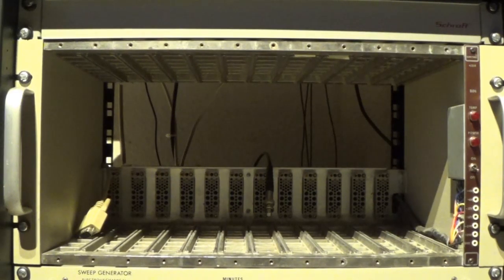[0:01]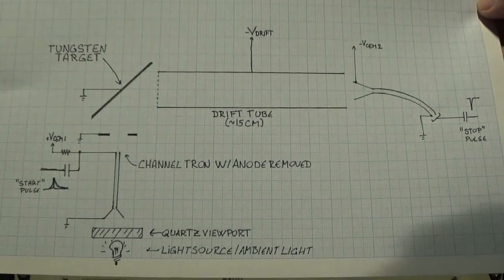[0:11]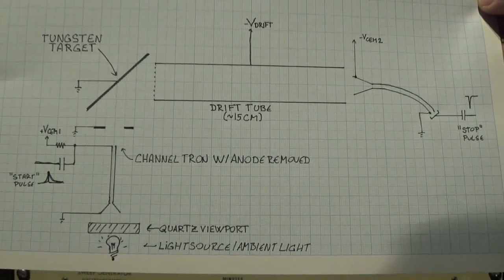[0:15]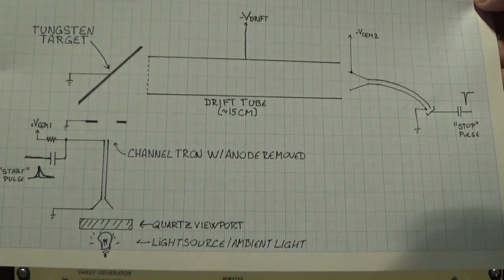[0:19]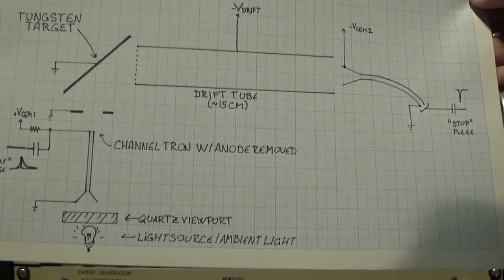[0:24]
I'm building a time-of-flight mass spectrometer, and today I'm going to discuss the electronics used in that. Fundamentally, this is the instrument I'm trying to build. The cool thing about this is that it uses two channel electron multipliers, one as ion source and one as detector. So the basic setup is this.
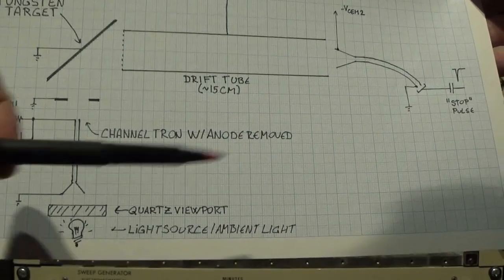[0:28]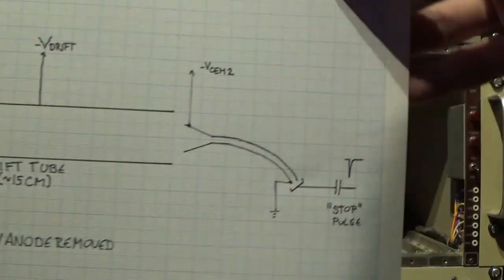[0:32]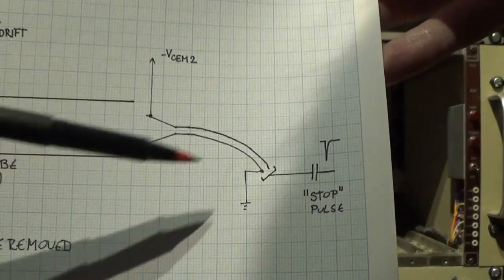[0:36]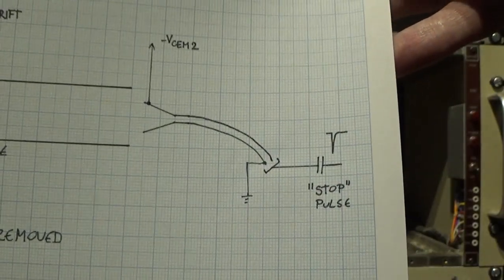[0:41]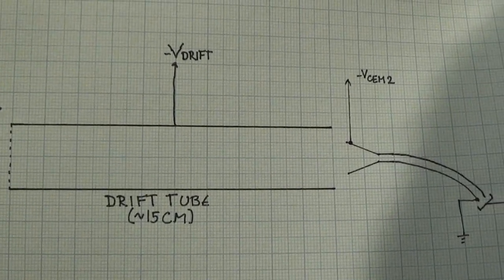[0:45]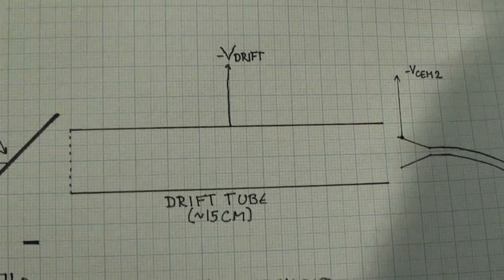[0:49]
This half is exactly as it is in the vast majority of mass spectrometers. There's a channeltron set up to detect ions, in this particular instance, positive ions. So, we have a drift tube, also called a field-free drift tube, set to some negative voltage. Once the ions are in that, they'll basically just move gently along this way.
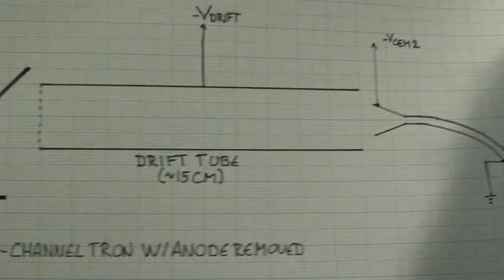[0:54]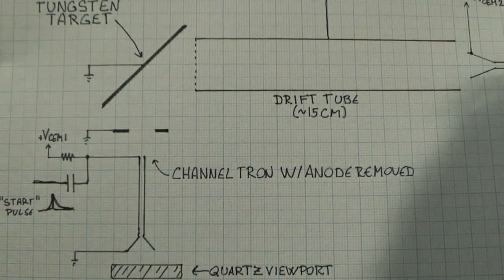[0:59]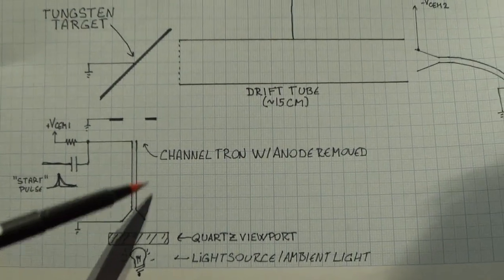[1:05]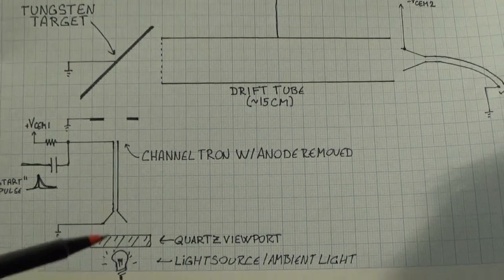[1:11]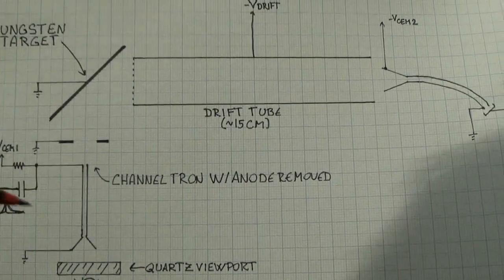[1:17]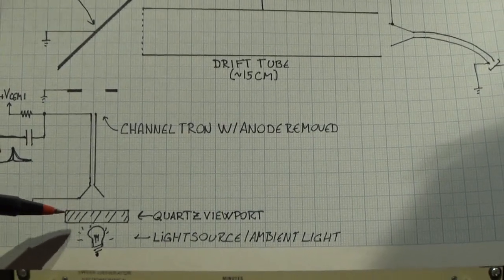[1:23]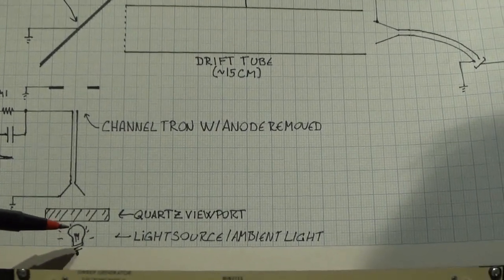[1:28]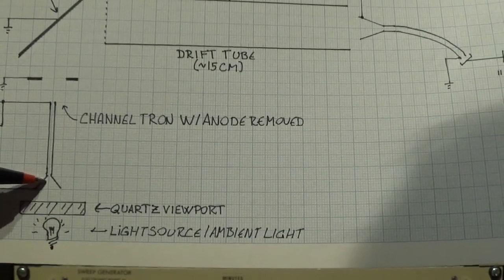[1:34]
And here comes the novel thing. I say novel, this is quite an old idea, but it's quite easy, so I wanted to try it out. We have a channel electron multiplier here with the anode removed, so this is just an open tube. It's set up with the bias that it's usually given to create a bunch of electrons. And here we have a UV transparent glass window. I have bought a quartz window for this occasion. You'll have some light source outside, maybe just ambient light, maybe a small light source. This will just shine UV photons into the electron multiplier.
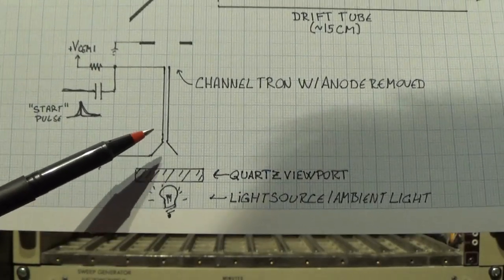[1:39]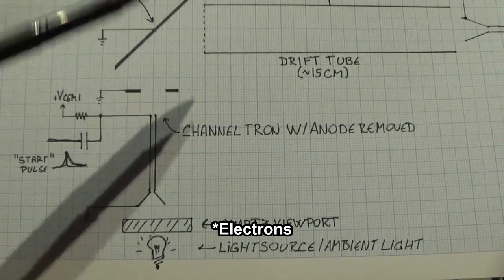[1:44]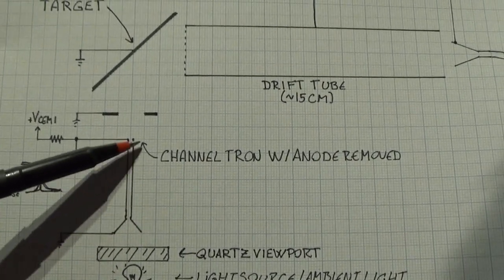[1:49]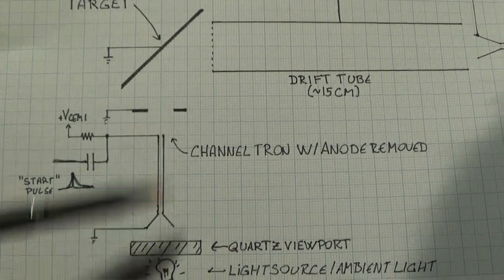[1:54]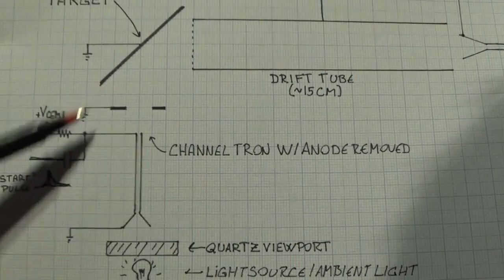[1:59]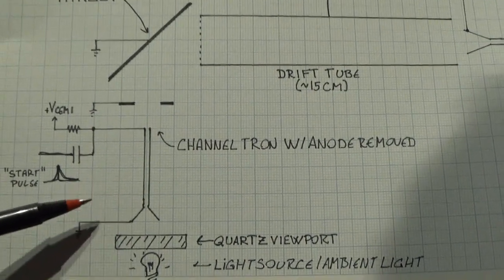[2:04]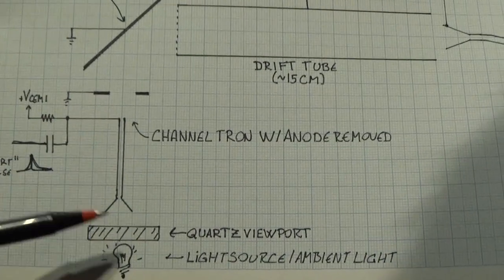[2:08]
It is also sensitive to UV photons, not as much as to electrons, but it is. And so you'll get bunches of electrons shooting out here. Remember, one particle impinging here will give a huge cluster out here. So you'll get bunches at some random interval. You can adjust the light intensity, of course, to give the counts per second you want. About 100 per second would be nice. And then you can take that pulse out exactly as with any other electron multiplier. This is basically a homemade PMT, I guess.
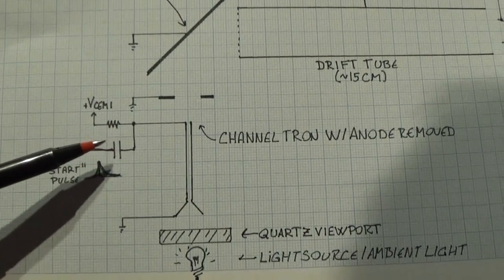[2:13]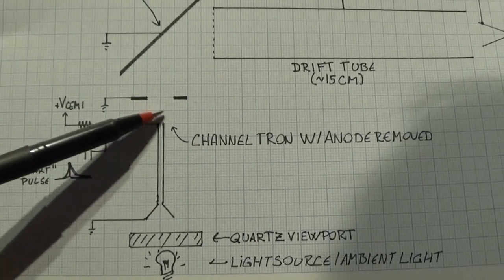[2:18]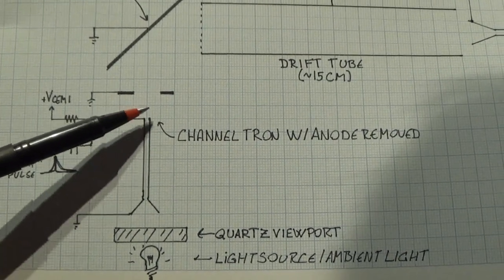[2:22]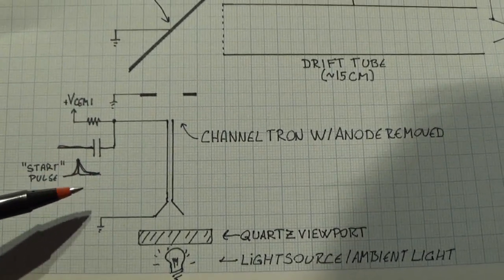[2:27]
And the pulses will be positive because we are not taking the electrons from the anode, so we don't collect electrons, we actually lose electrons, so we get the opposite polarity pulse. That's a bit confusing, but I think that's how it is. We'll see when I build it.
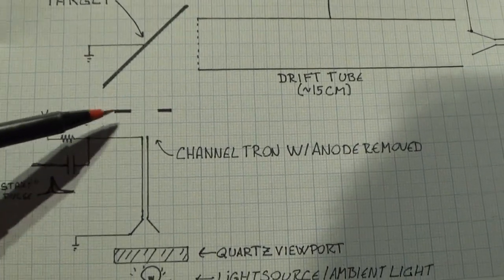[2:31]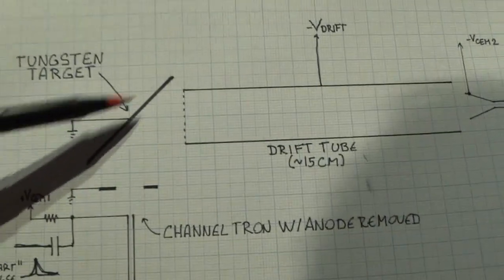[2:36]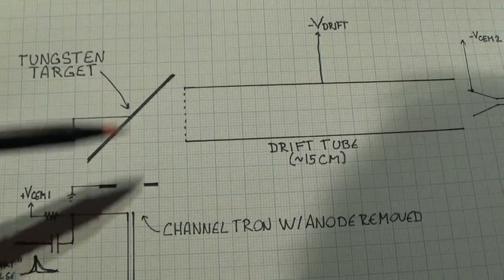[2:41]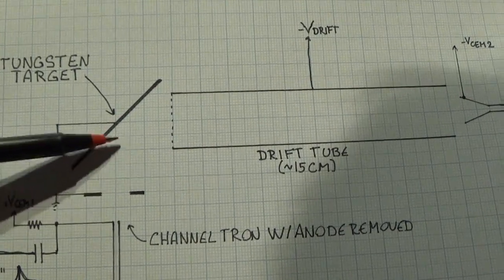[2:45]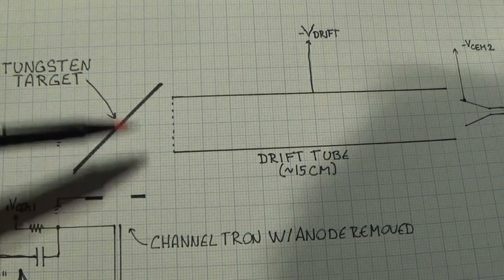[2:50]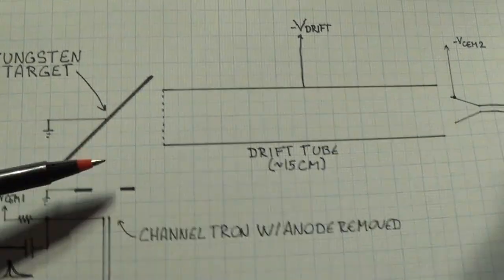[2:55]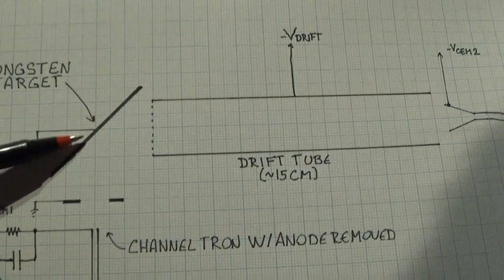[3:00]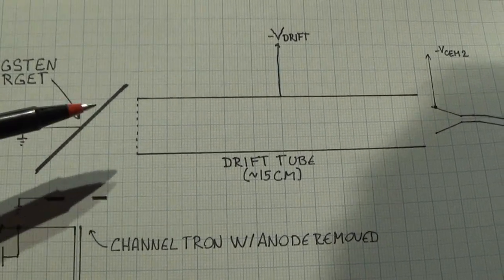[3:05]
And then there's just a guiding ring that's grounded here, and a tungsten target plate. This is just a piece of tungsten foil arranged at 45 degrees to the impinging electrons. In this volume, any gas molecules that are hit, any residual gases, will be electron impact ionized, like in GC. And if there are any ions adsorbed on the tungsten foil, they will also be ionized. So you can also use this for surface study as well as residual gas analysis.
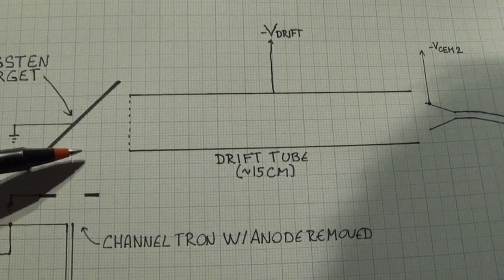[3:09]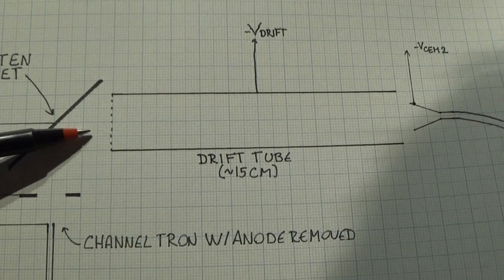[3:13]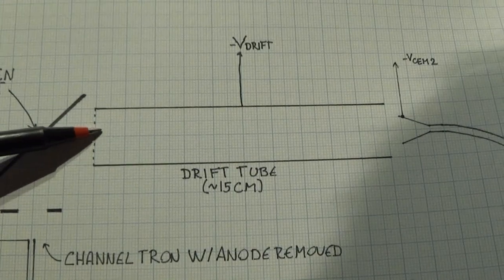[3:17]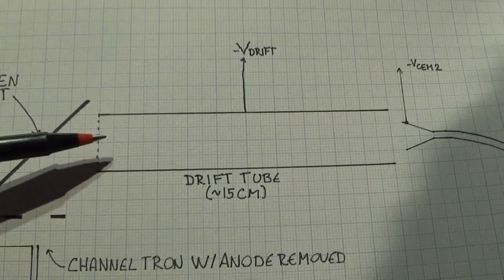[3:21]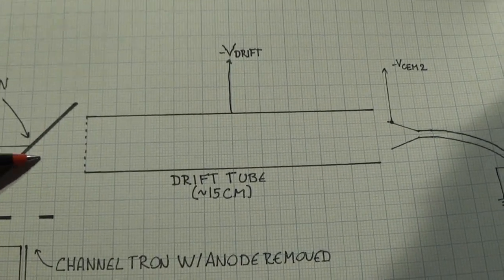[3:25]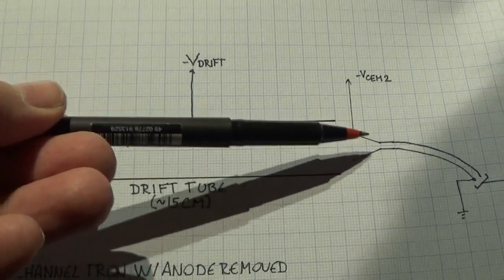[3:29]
These ions will then be positive, they'll be stripped of some electrons. And these positively charged ions will be attracted towards the negative charge of this drift tube. I'm not completely sure what drift tube voltage to use, maybe a couple of hundred volts, I'm not sure. And they'll then drift gently into this and hit this detector.
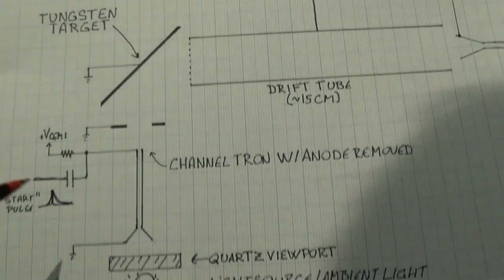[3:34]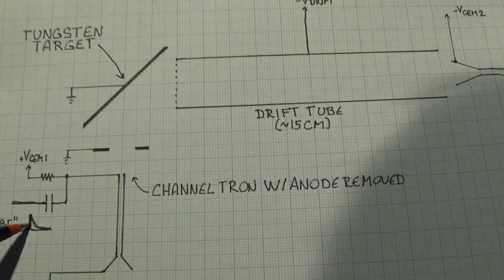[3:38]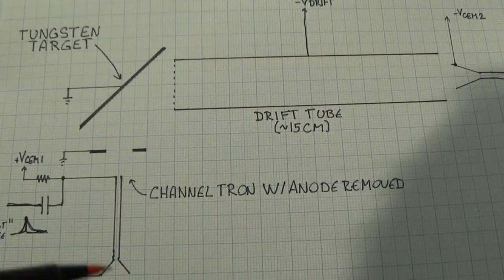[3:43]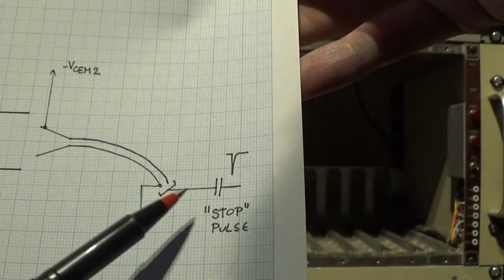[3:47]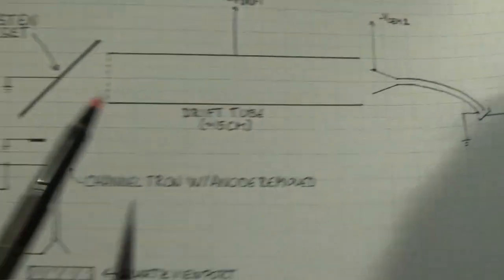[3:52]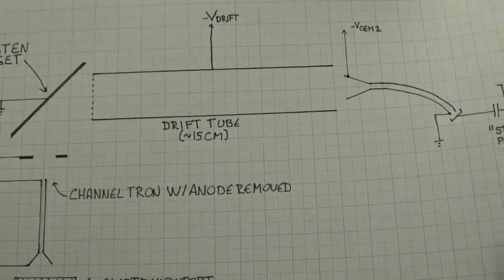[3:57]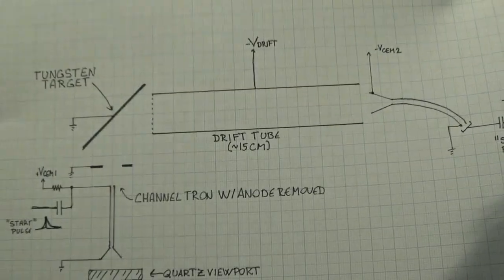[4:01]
Now, we know the time they originated, right? Because each electron bunch has a timing start pulse. This pulse indicates that electrons have left this channel electron multiplier. And the detector output signal here is then a stop pulse, and that time differential is proportional to the mass of the ion. This is the principle of a time-of-flight mass spectrometer. And this is so simple that how could it go wrong, right?
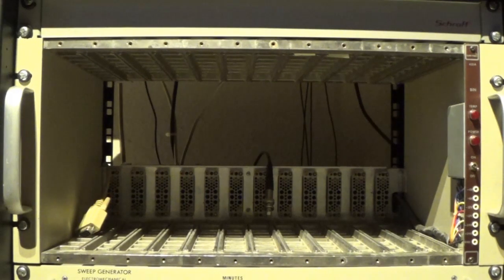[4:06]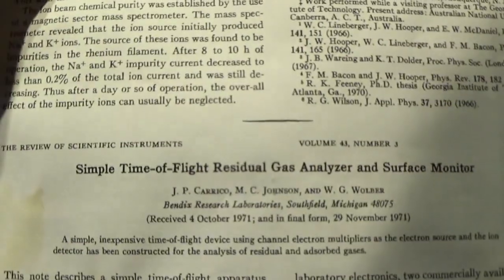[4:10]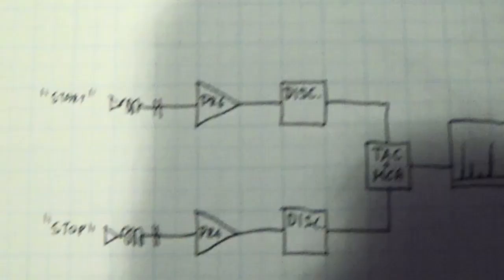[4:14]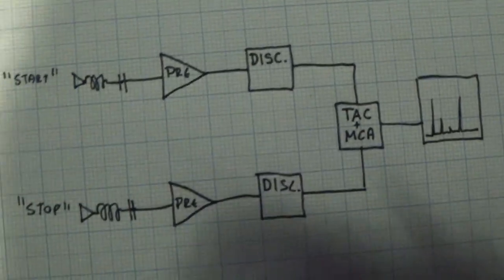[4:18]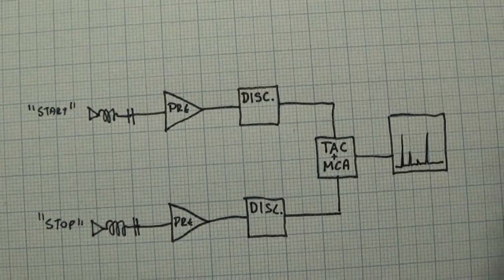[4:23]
As stated before, I wish this was my idea, but it isn't. Here's the article. It's from 1971. All the good stuff is. So basically, we need to be able to time particles and measure the time between two pulses. And the way you do that in particle physics is like this. This is the basic principle.
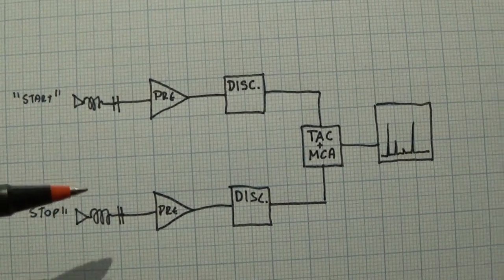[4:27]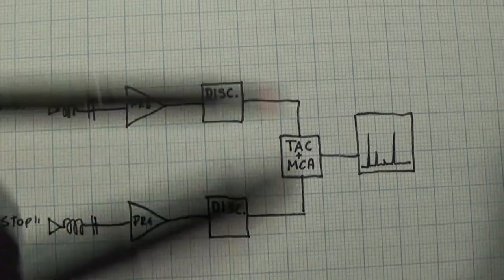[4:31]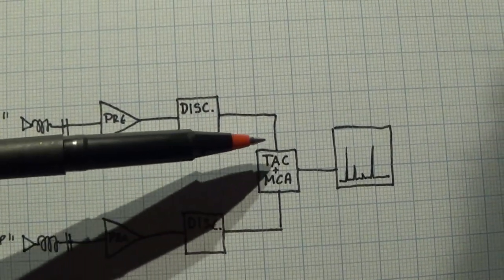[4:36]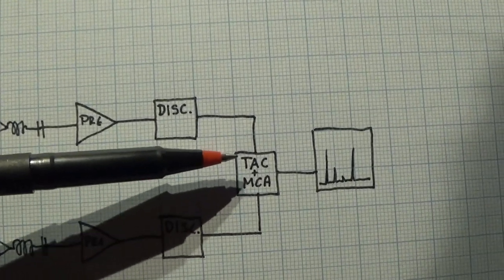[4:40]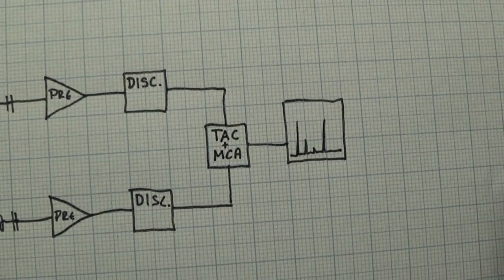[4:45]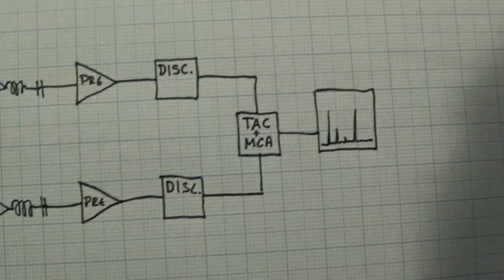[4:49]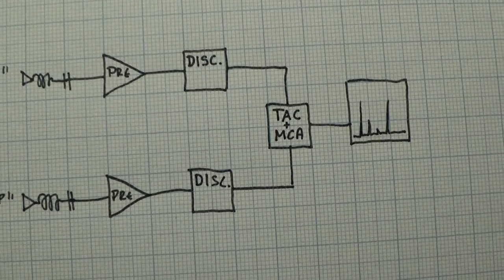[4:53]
You have our two channeltrons. I've omitted the bias supplies. We have pre-amplifiers. We then have two discriminators that set a baseline for noise. And then basically we just get the start and the stop pulse into what's called a time to amplitude converter, which basically just, as the name suggests, converts the time differential to a pulse height. And then we just use a normal multi-channel analyzer, as you would for gamma spectroscopy, to display this in a spectrum. Couldn't be simpler.
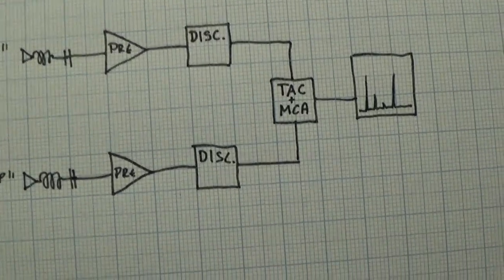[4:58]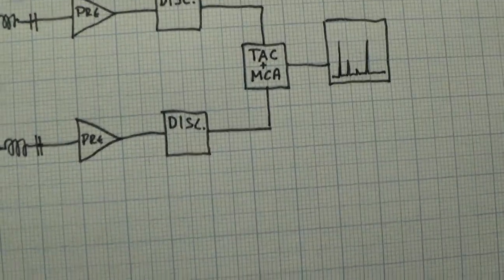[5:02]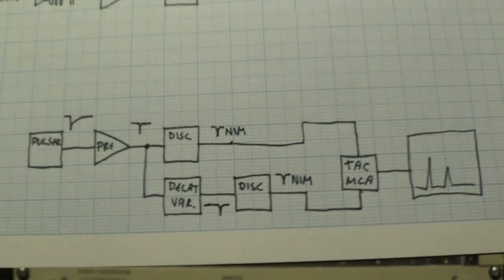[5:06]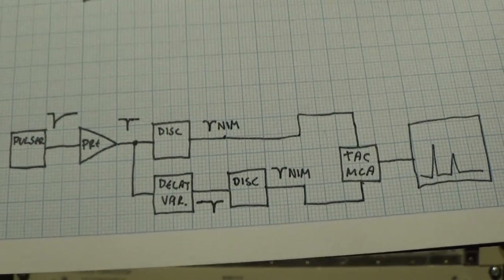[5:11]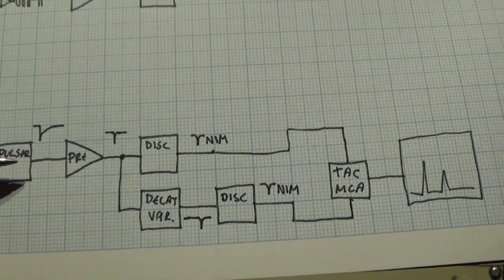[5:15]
Okay, so today I want to test this because I have almost all the gear for it now. And the test setup is going to look something like this. It's a bit more complicated. Basically, we are simulating two pulses by first having a pulser. This pulser is fairly slow. And then we have our fast timing preamplifier here, which will give a very fast pulse out.
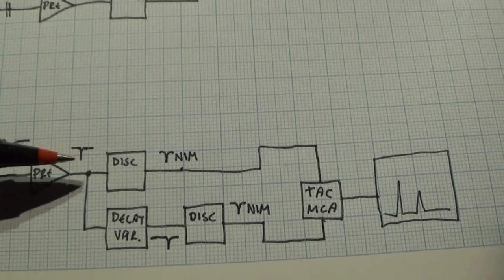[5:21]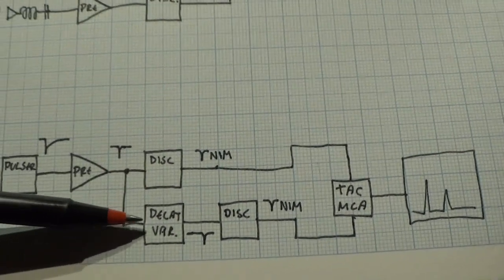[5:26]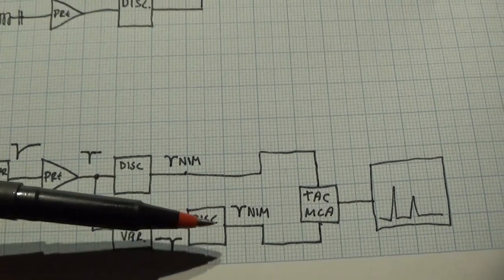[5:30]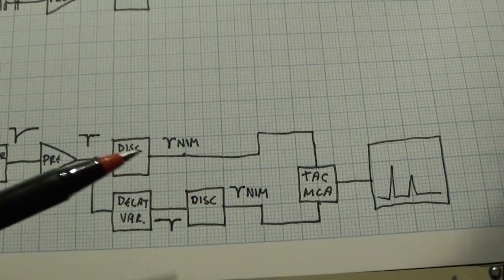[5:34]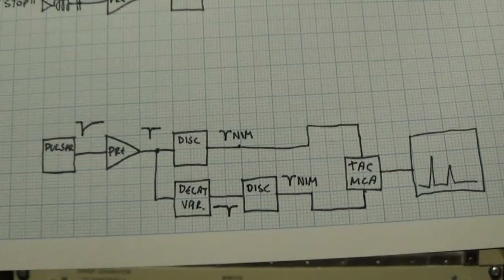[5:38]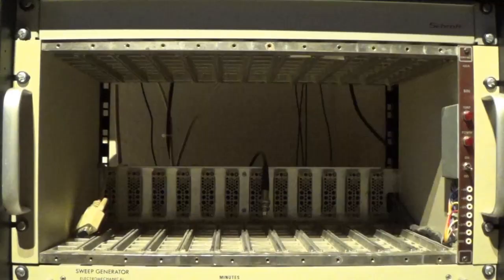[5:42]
And this pulse is then sent to the start discriminator and through a variable delay to the stop discriminator and then to the time to amplitude converter. Now, that delay lets us simulate different times of flight and lets us see if the electronics work at all. And then we have the MCA doing the counting. So let's set this up.
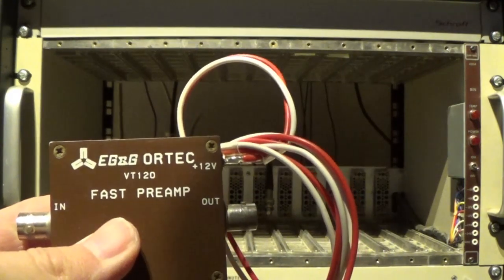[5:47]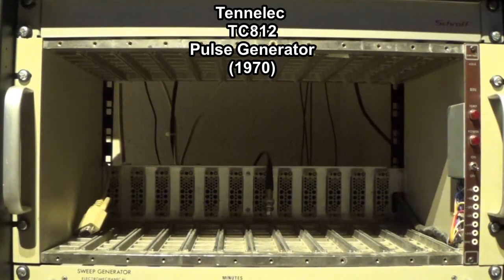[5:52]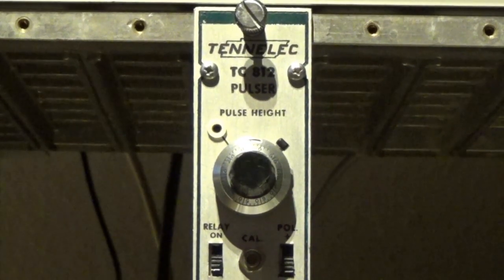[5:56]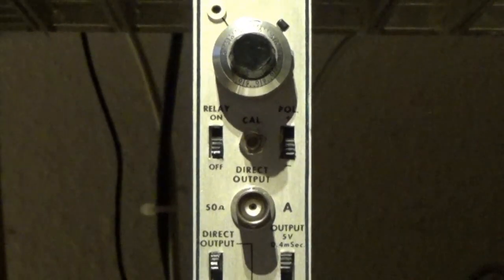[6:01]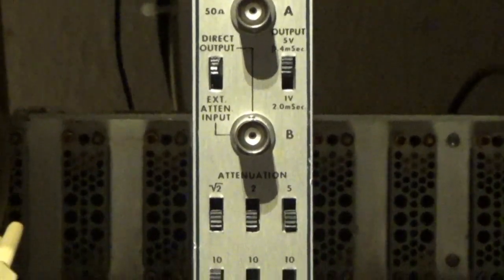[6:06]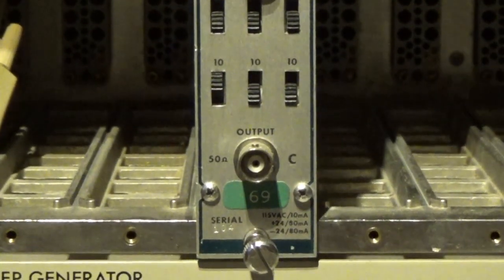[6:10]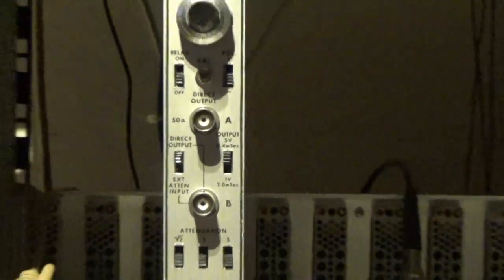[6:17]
First of all, we have our preamplifiers. I'm using these Ortec fast timing preamplifiers. They are practically made especially for this. I think I've shown this module before. It's a Tennelec TC812 pulse generator, usually used for calibrating gamma spectrometers and stuff. And it's basically just a mercury relay in a box with some added features. It's quite handy, and it works quite well. I think it's 60s vintage. It's going to be much too slow though, that's why we need to use the preamplifier.
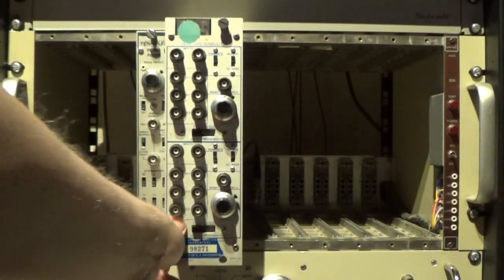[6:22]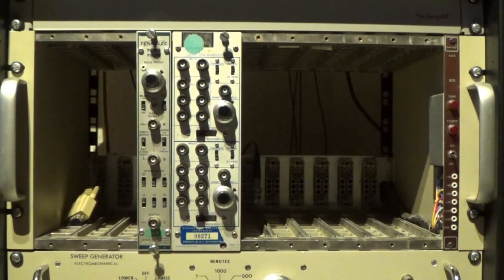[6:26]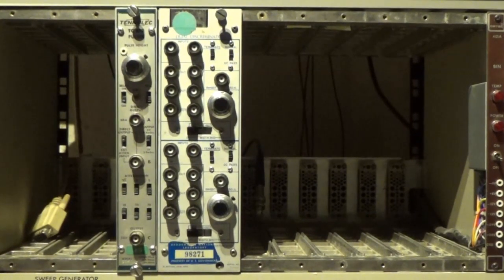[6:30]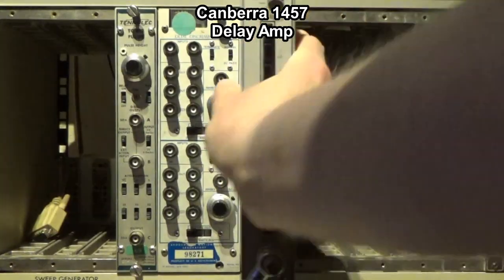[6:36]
Next up is a timing discriminator, or a fast discriminator as it's called. Also 60s vintage, '68 to be precise. Surplus from Brookhaven National Laboratory. So this will provide our discrimination and pulse rejection. And here we add
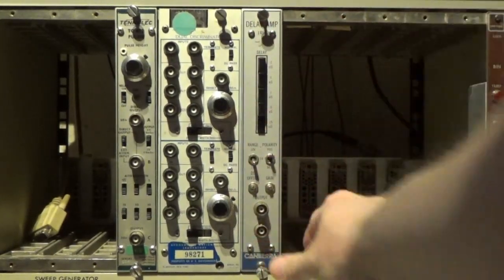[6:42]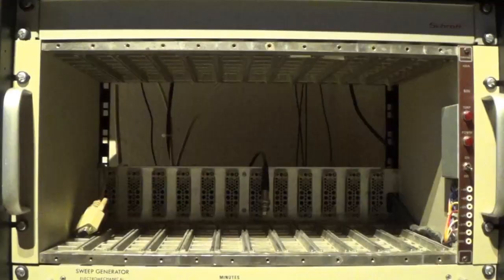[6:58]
a Canberra delay amplifier. This basically gives us five different selectable delays that can be added together. A 250 nanoseconds, a 500 nanoseconds, a 1 microsecond, and a 2 microsecond delay. You can also set the voltage ranges and do pulse polarity switching and such. These modules and delays are almost crucial to calibrate a lot of this timed stuff. Also, if you have a big setup with a lot of cables and you need your gate signal to arrive at the same time as a pulse signal, having these delays is completely critical. So those are very good ideas to have.
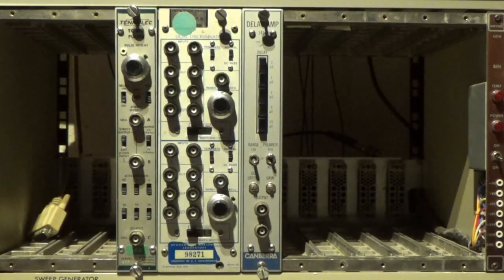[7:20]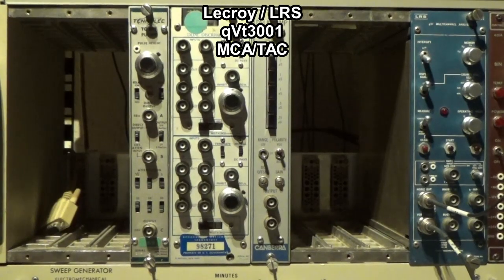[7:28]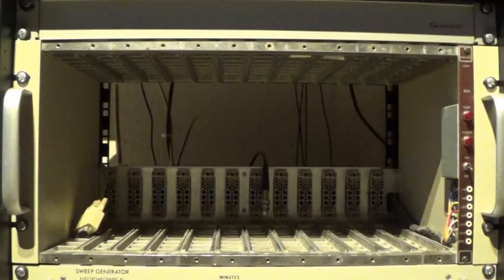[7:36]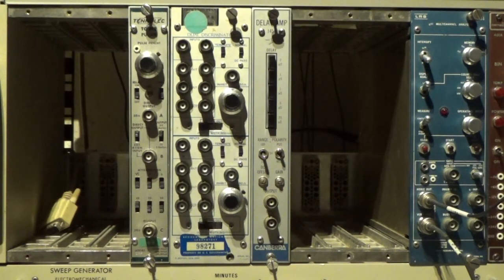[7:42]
I'm going to add now a very strange module that is simultaneously a time to amplitude converter and a multi-channel analyzer. So this module over here, the LeCroy LRS QVT 3001, has two cool features. The first is that it's a tiny multi-channel analyzer. It just outputs X and Y signals to an XY mode monitor or oscilloscope as a screen. It also has three modes. It has Q mode, where it has a built-in preamplifier, so you can basically just put a photomultiplier or a scintillation probe directly on it. It has a normal MCA mode, and then it has the time to amplitude conversion mode, where it's basically a complete time of flight system. Okay, so that's all the NIM electronics we need.
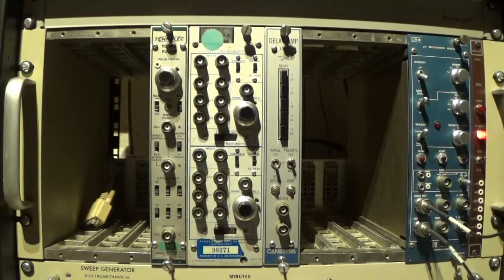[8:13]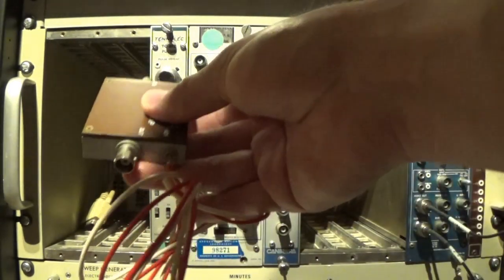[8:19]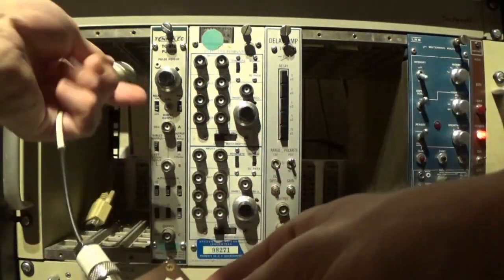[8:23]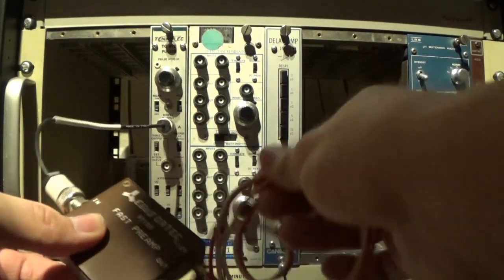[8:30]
Also, we have an XY monitor for the multi-channel analyzer, and we have a digital oscilloscope. So first, let's make our signal source. So here we have our Tennelec tail pulse generator. And we are going to connect that fairly directly to one of these fast preamplifiers. These fast preamplifiers are terminated in 50 ohms, which is exactly what we want, so we don't need to do anything more than add a cable to that.
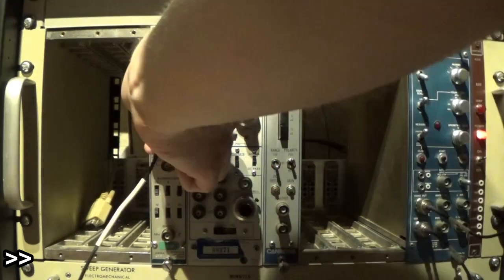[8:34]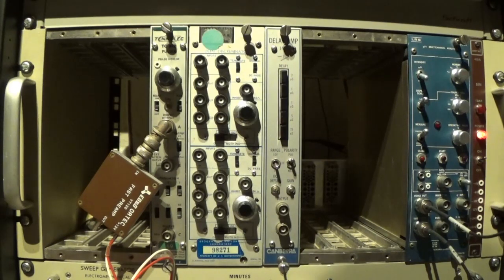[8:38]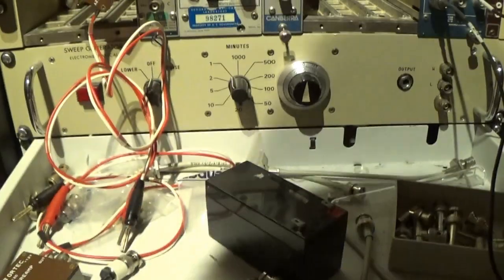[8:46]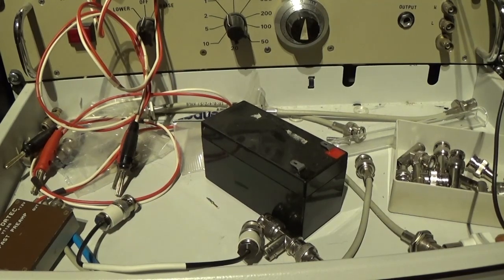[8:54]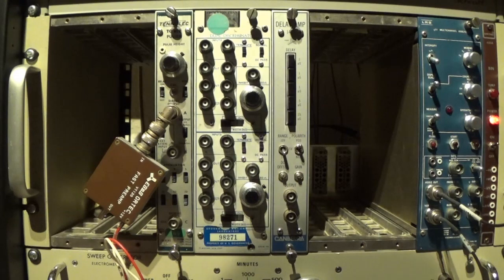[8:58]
By the way, I would say one of the most critical things about doing modular crate electronics in a rack like this is to have a drawer below the rack where you can have parts and adapters and small cables and miscellaneous little things. Also, if you drop anything, it'll drop into that. So first of all, we can send our preamplifier directly to our oscilloscope just to check out what's coming out of it.
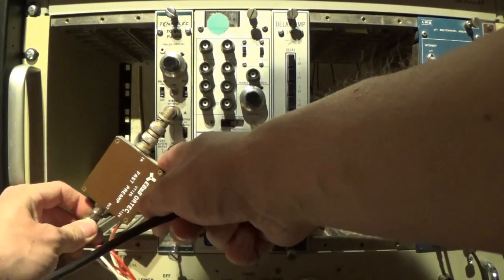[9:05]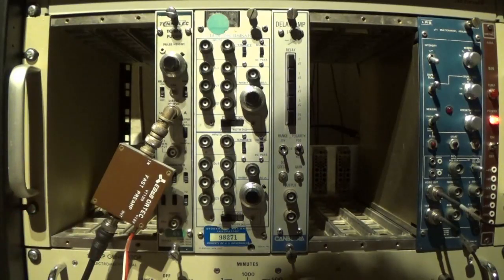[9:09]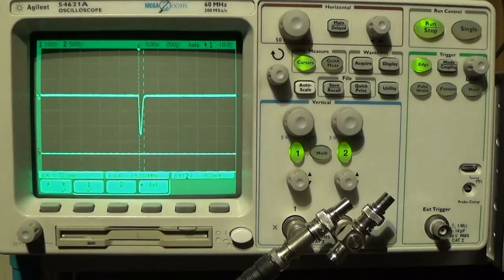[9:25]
The preamplifier I just connected directly to a small lead acid battery. It was just the easiest way of getting 12 volts remotely, and it lasts a million years with like 2 milliamps of what this draws, and it's very noise free. And here we have a nice, almost symmetrical 250 millivolt narrow pulse out of the preamplifier. That's good, we can feed this to our discriminator.
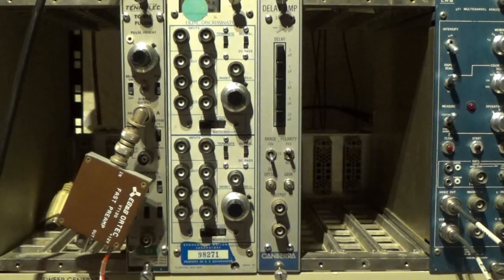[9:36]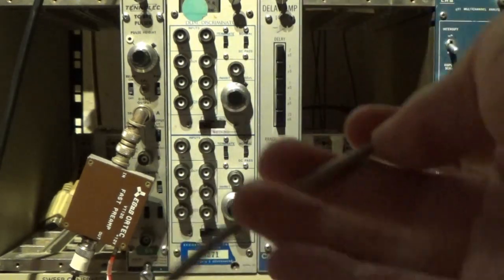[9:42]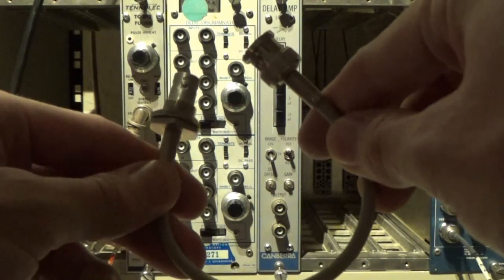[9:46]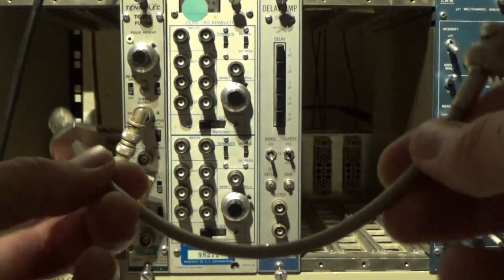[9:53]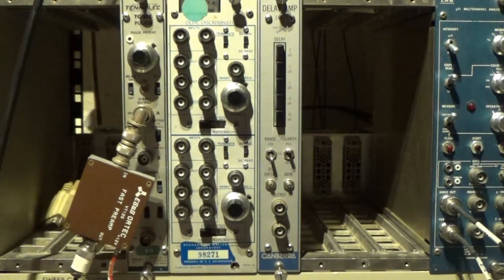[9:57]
Okay, now let's put this preamplifier signal into the discriminator. By the way, another good tool for timing, short elongation BNC cables, because when you get to nanosecond timing, this is actually enough to see a difference. This is approximately, I would say, maybe 2 nanoseconds. It's a good idea to keep cable lengths the same, and it's a good idea to have a tool to do that.
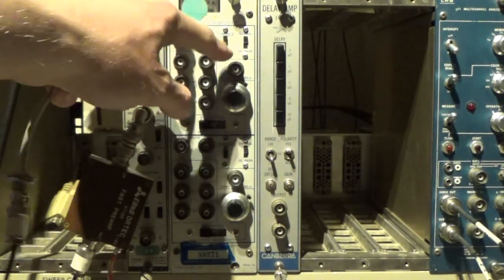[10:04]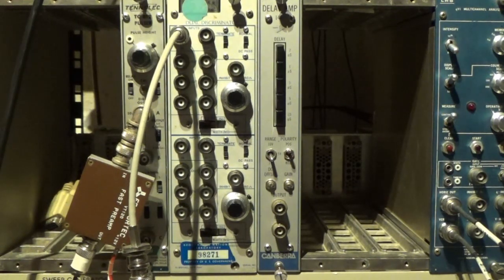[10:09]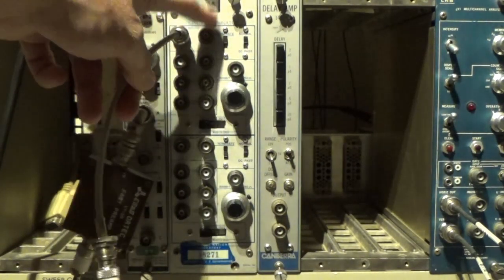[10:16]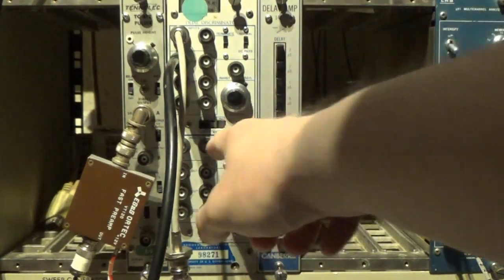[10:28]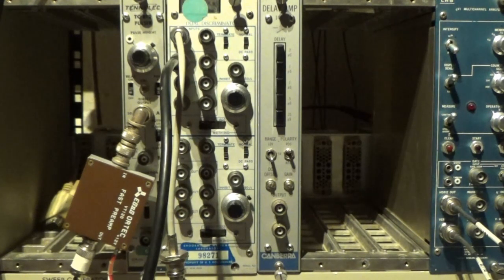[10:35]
So these have an input and an output here. It also has the option to terminate or not. We can just put it to terminate, that's fine, I think. Now the output here is basically just bridging this out. It's quite smart because then you have a simple port where you can put your oscilloscope. And remember, everything has to be terminated properly, so everything is terminated in these 50 ohm loads unless it has an internal termination like this does. Now let's take the output here. By the way, on the controls of the discriminator here, you cannot set the discrimination threshold. It's fixed at around 100 millivolts. So now we can take a look.
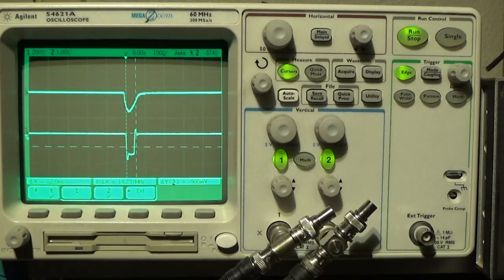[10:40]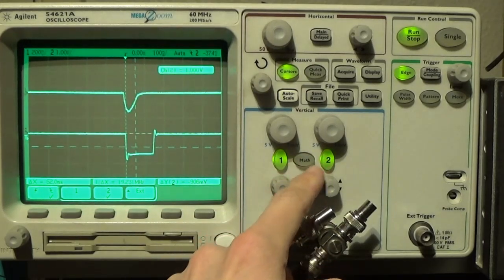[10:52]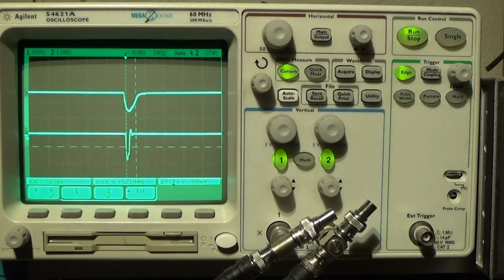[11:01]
And here we see channel 1 is the preamplifier output and our pulser, and channel 2 is the discriminator output. We can set the output width, and we can set it short, like that. Notice the output is about 800 millivolts into 50 ohms. This is the hallmark of a NIM pulse.
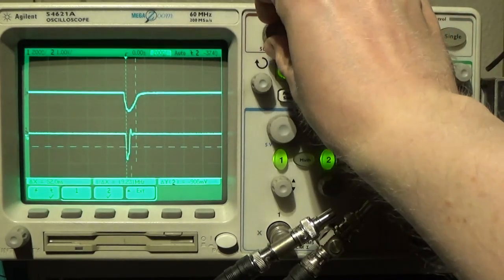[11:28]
Now, NIM fast logic has this current-based logic into a 50 ohm termination, and it gives a negative pulse of around 800 and something millivolts into a 50 ohm load. So this is a NIM pulse, and this is why we need this discriminator. I'm just doing this because then the update rate is better.
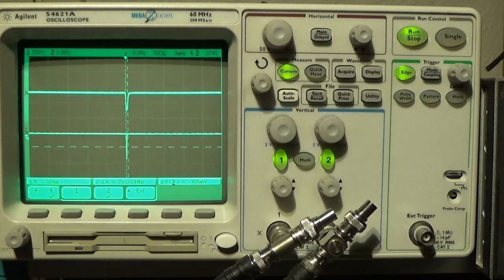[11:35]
I'm going to vary the pulse now, and please note, you can see the output pulse doesn't change. It doesn't care about the pulse height, it just cares that it's above its threshold, which is something like 50, 80, 100 millivolts. Now we add in the delay.
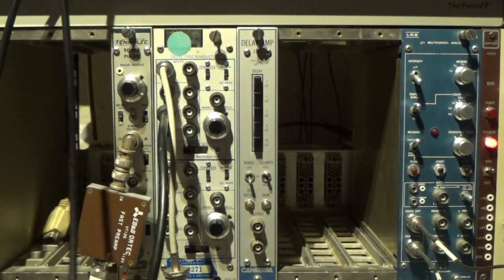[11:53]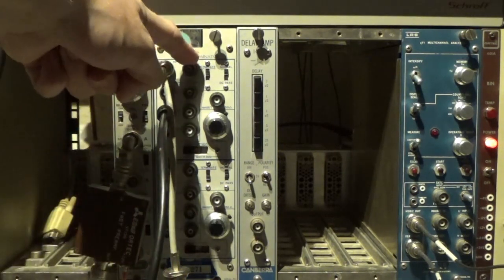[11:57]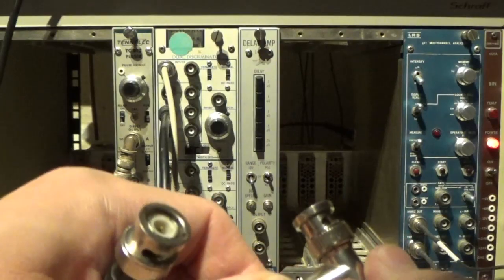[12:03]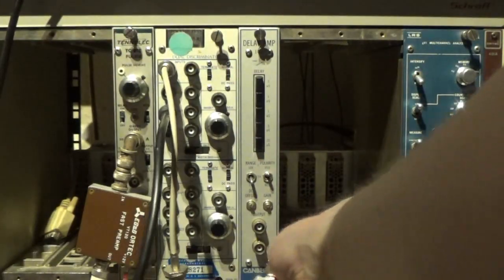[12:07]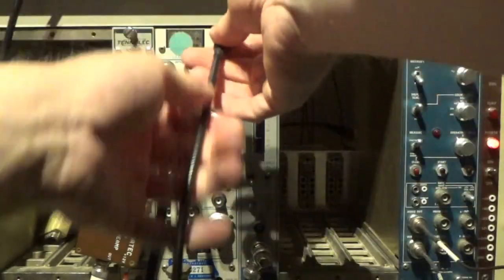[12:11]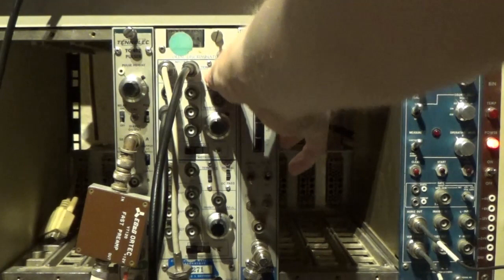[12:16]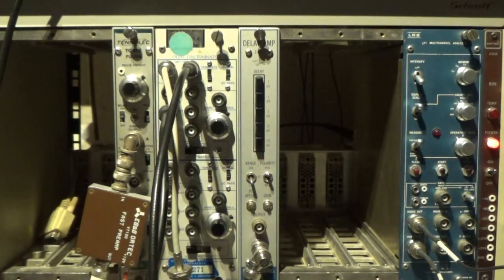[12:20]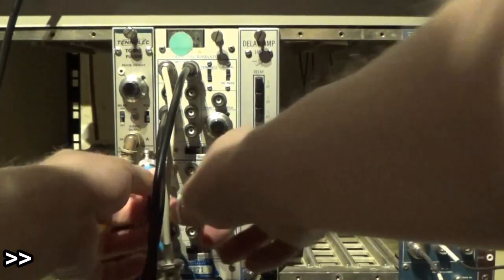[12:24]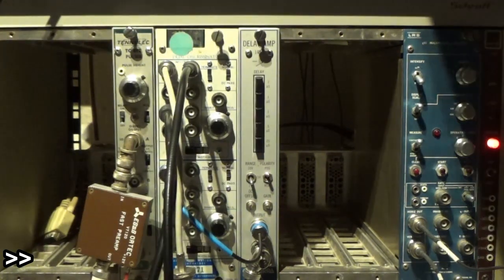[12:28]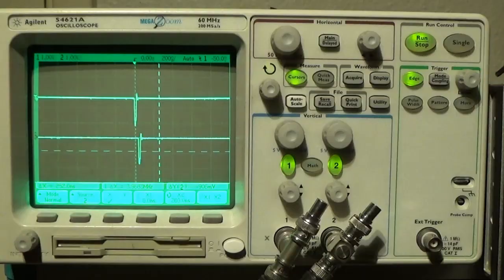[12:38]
When adding in the delay, it's as simple as just using the direct output here. So let's add this into our delay. And this needs to be terminated. The input is down here, and we're just going to use this output here. Now we can take this terminator away, and take the output of that into the other. Okay, and then we can take the output of that into our scope, and then we should be able to see. Alright, so there we have the two pulses outputted from both discriminators.
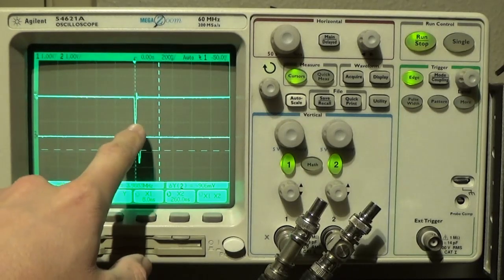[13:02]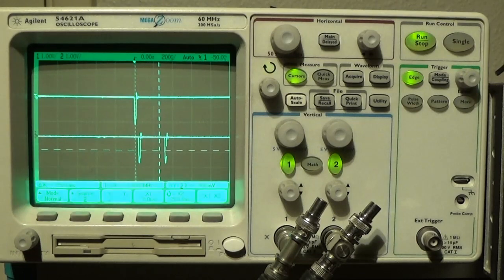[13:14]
They look identical, but they are shifted slightly. The delay is set to not shift them any. This is just the delay of the cables and the electronics. This is why it's very good to have a variable delay, so you can match up signals. If this pulse was going to trigger for this one or opposite, then this would not do. Now, we can add in delays. Here's 250 nanoseconds. This is 1 microsecond, actually. This is 500. So yeah, now we have our signals, and now we can feed them to our multi-channel analyzer.
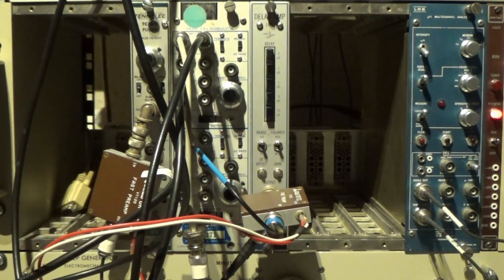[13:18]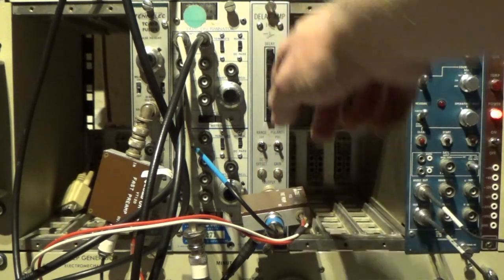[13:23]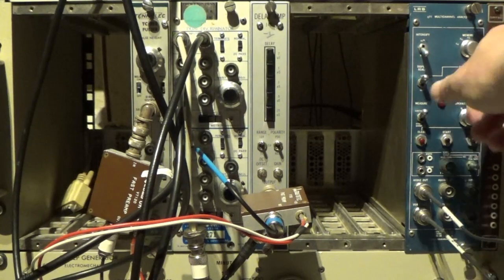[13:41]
Please note that I've added in another preamplifier after the delay, because the delay stretches the pulse very flat, and then it dips below the threshold for the discriminator, and also gets very wide. So this will keep it a short, nice pulse, and also amplify it. Basically, the analyzer just has a start and stop input, and then it generates all the gating itself, and it has a display that I'll show you later.
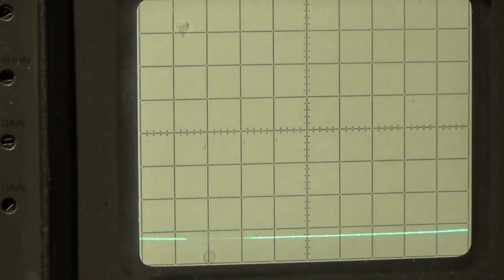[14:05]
Okay, so let's decide that this cable is start, and that this cable is stop. Okay, that should be it. Now we can clear the display, and we can start the count. There. It's difficult to see, but you can see the 250 nanosecond bin pile up. And now let's say 500.
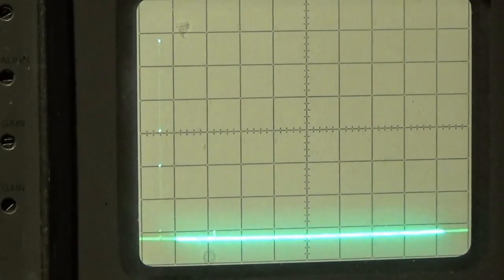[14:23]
I'm just switching out the delay now. Look at that. We're actually measuring time of flight on a 1970s display, with all the magic that goes with it. 750. Oh, a bit drifty. Not exactly what I would call linear, but I don't think that is the analyzer electronics. I think that is the specific delay lines that are not that precise. And that's 1 microsecond. So now we have our time of flight display.
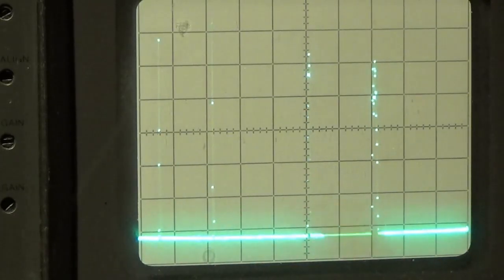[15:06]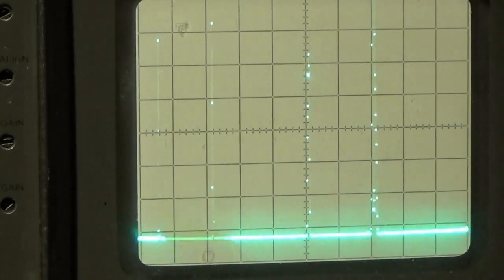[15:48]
In the paper I've been looking at, they claim to have a flight time of about 2 microseconds for mass number 16, which will give this display, as it is right now, about half that resolution. You can see this is 1 microsecond, so maybe 1.25 microseconds. That'll give us something like up until 10 mass units, which is not brilliant. We would like to go to at least 100, so we need to slow this down somehow.
The analyzer does have provision for slower ranges. You have to add some timing resistors yourself. Anyway, that's all I had. Hope you found that interesting. Of course, I'll update you once I actually build the ion source and the detector. I think I'll test the ion source first and then see if we can get this to actually work. But the electronic signal chain is definitely good now.